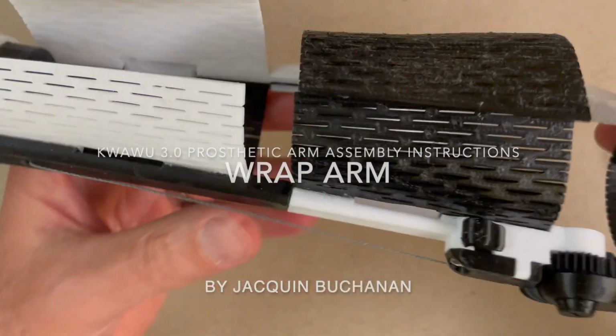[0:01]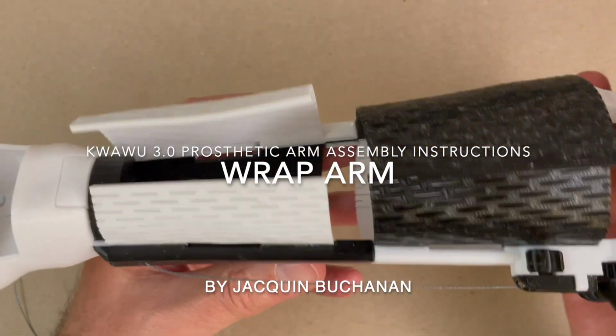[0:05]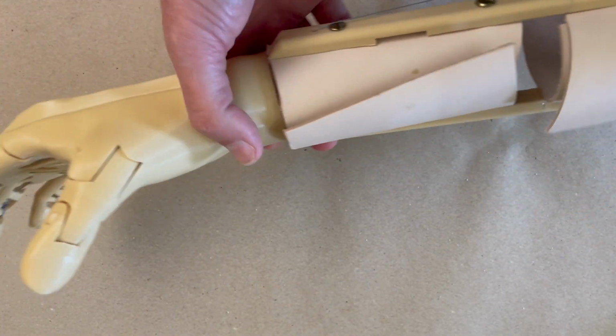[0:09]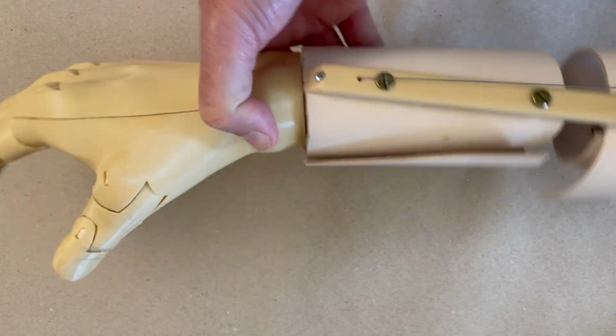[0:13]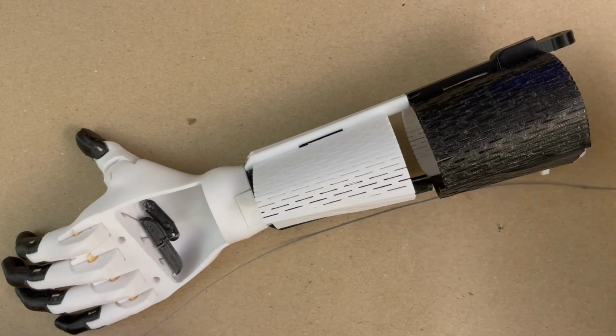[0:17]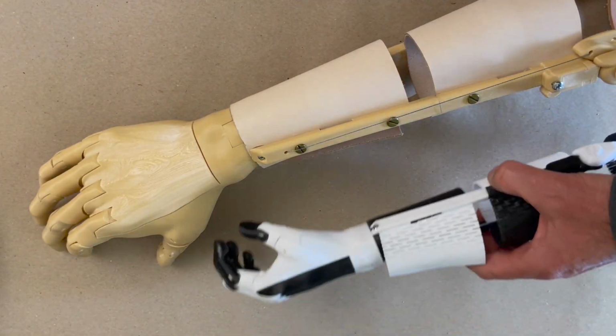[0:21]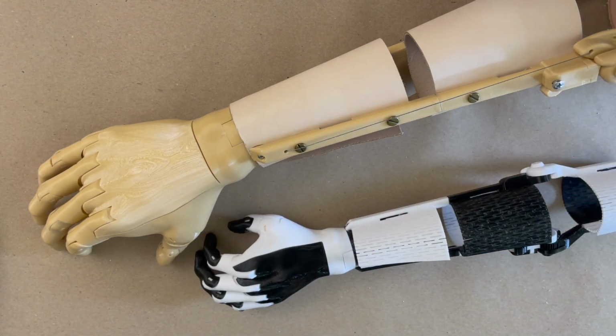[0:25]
Welcome to the Kwawu 3 wrap arm assembly video. We're going to put together the plastic wrap arm and the leather version of the wrap arm together in a single video. There's only a slight variation between the two, so I'm going to combine these two into one video. No matter which one you're building, you'll be able to follow along with both. I'm doing the child size plastic arm and an adult size leather arm just for some variation in the video.
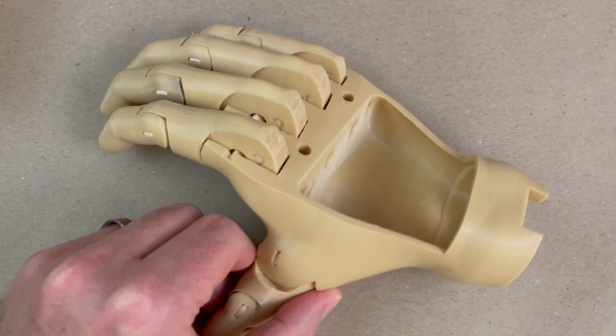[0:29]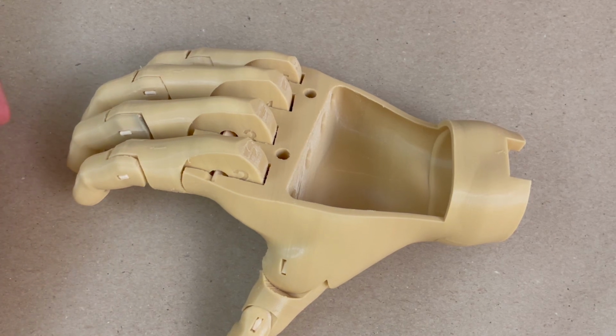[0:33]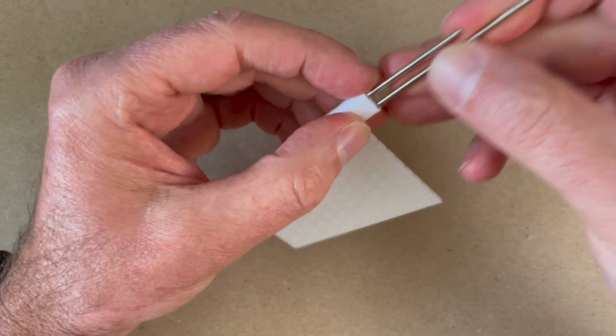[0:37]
So in a previous video, you should have already put and strung the hand together for the arm you're building. In this video, we're going to be attaching the hand to the arm. So let's get started and put together the plastic parts first.
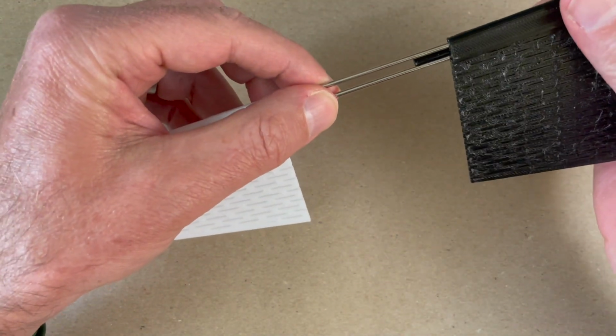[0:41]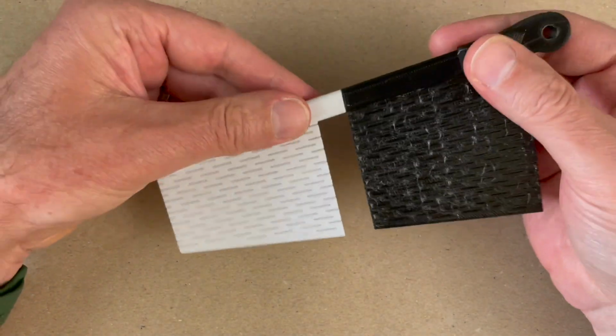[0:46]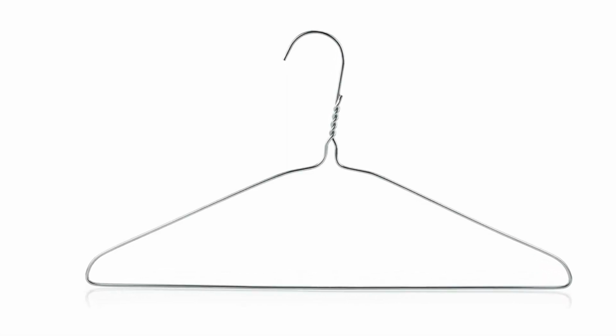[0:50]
I've got these 2mm rods, and you can get these 2mm rods on Amazon. They're called axles or toy axles or something like that. You can also use an average wire coat hanger, which is also a 2mm rod.
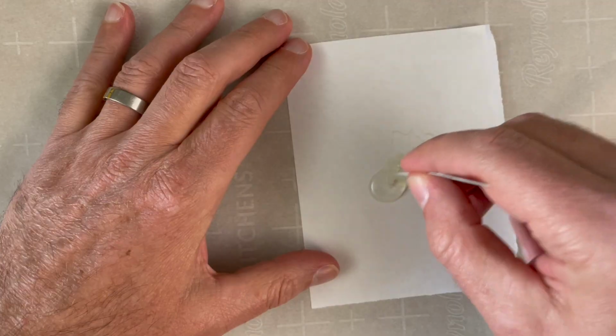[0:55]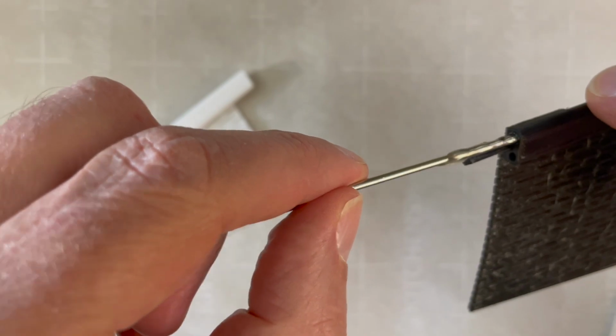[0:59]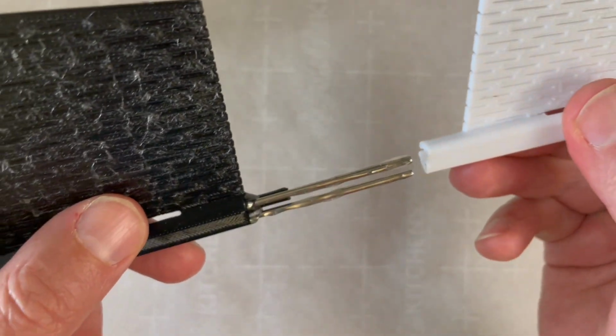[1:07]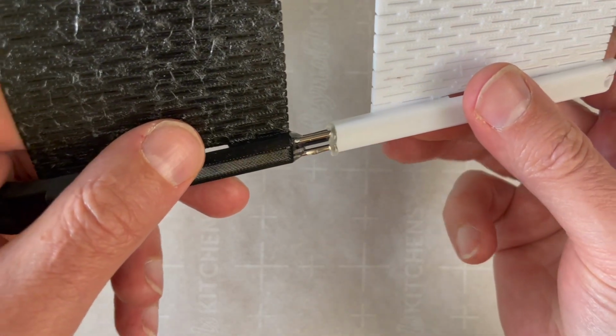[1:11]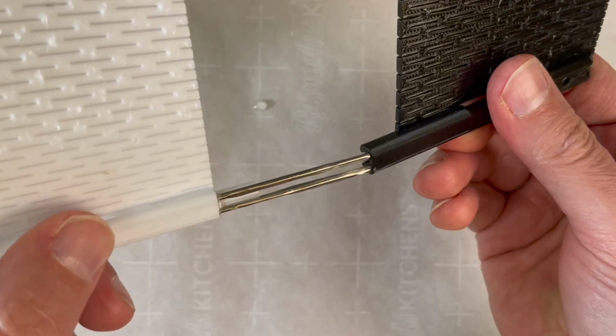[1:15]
We're going to mix up some two-part epoxy. We're using a lot of two-part epoxy in this video. That's how we're putting everything together. It really holds the PETG together well, so it's what I recommend. You can use CA glue, but it just doesn't hold as well as the two-part epoxy. These are sort of big joins, and you really want something that's going to fill the join and hold it. So I'm going to put a lot of epoxy on the rods, and put these two pieces together.
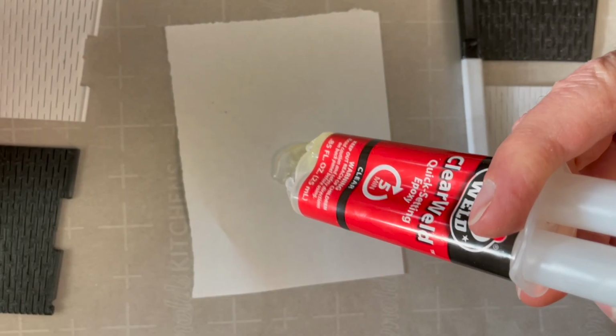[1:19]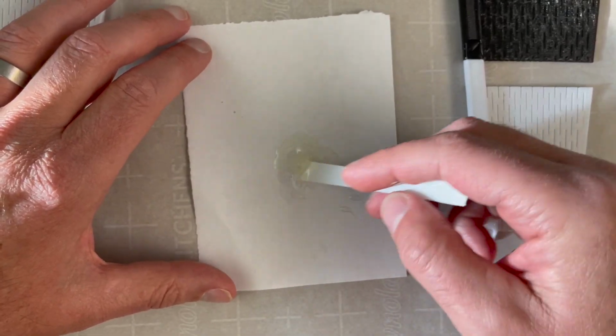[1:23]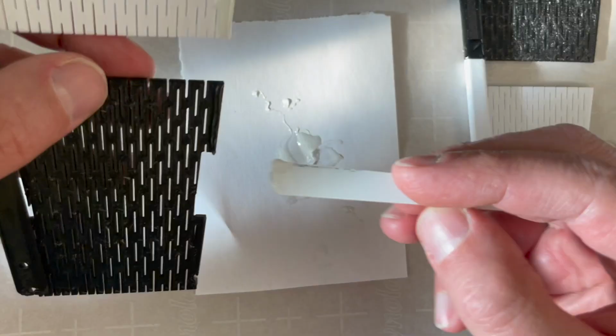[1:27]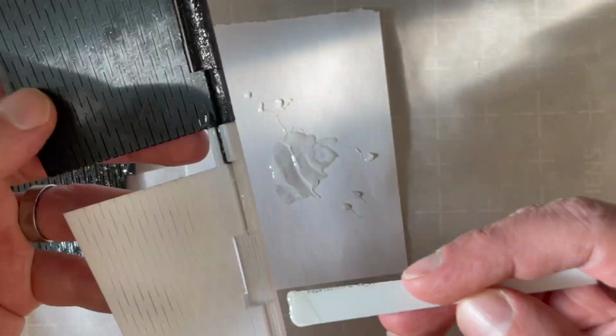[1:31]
I'm going to mix up some more. I really mix up the epoxy as I use it. This stuff sets really fast. If it starts to set, it really won't bond anymore, so you want to mix up only as much as you're going to use on each joint. I'm putting lots of epoxy here.
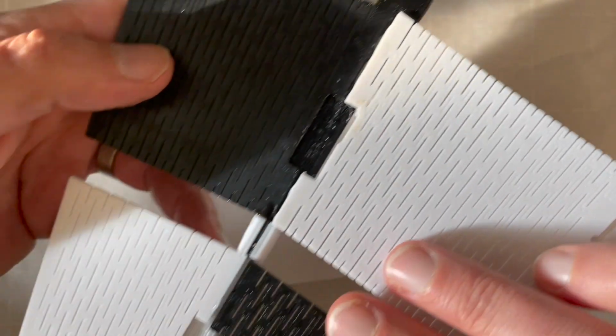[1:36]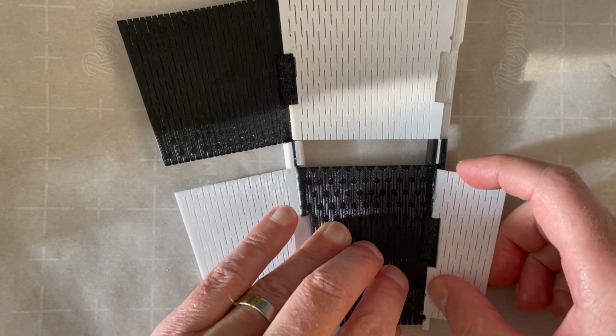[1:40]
Now that I've got all six parts of the base of the arm epoxied together, I'm going to put some paper over this just so I can put some weight on it and let it dry overnight.
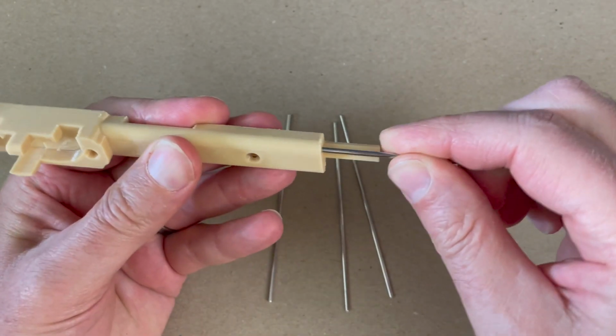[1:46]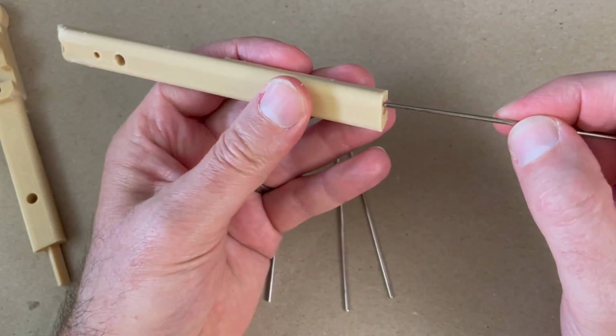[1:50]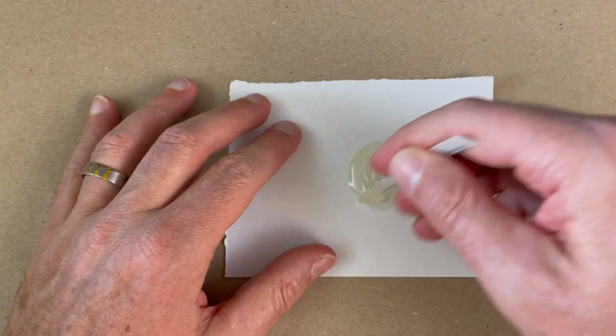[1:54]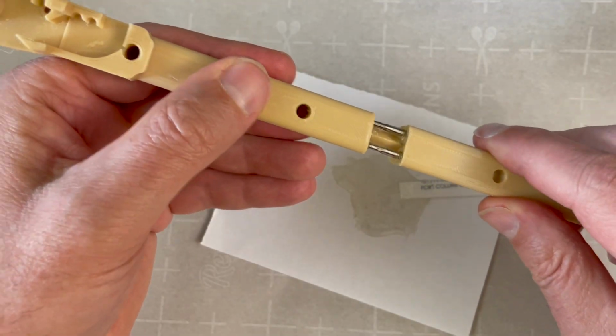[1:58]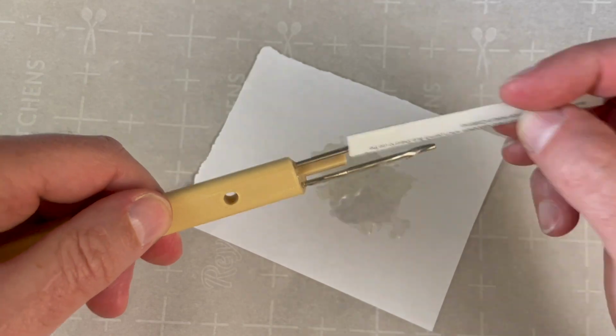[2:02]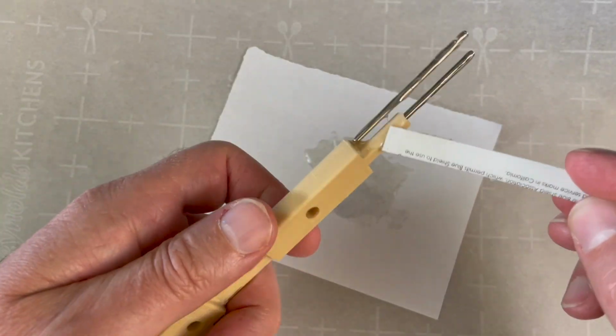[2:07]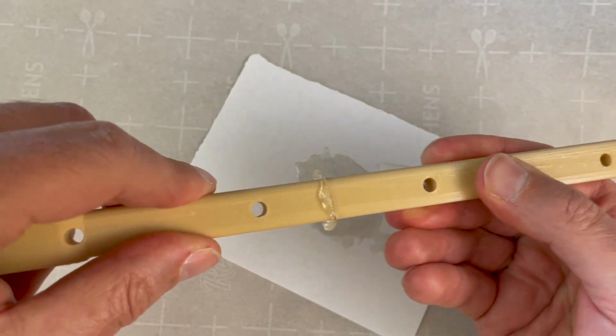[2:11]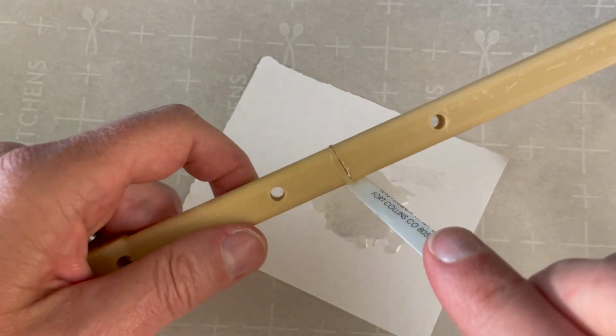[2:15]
All right, let's put the leather arm together. The leather has the same 2mm rods. No matter what size the arm is, they're always 2mm. Again, lots of epoxy. Here we don't have the flat plastic parts because that's going to be leather, and we're just putting together the stiffeners. You should have cleaned all these parts in the previous video, and just make sure they fit together well. They should slide together really clean, and clean off the excess glue.
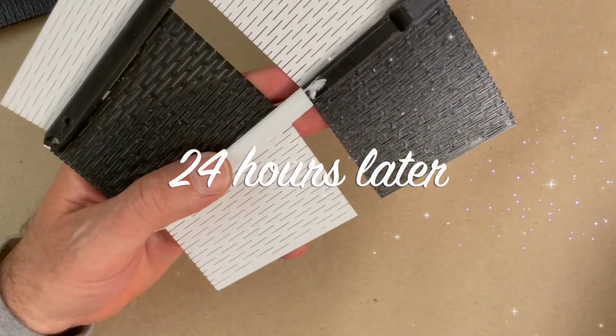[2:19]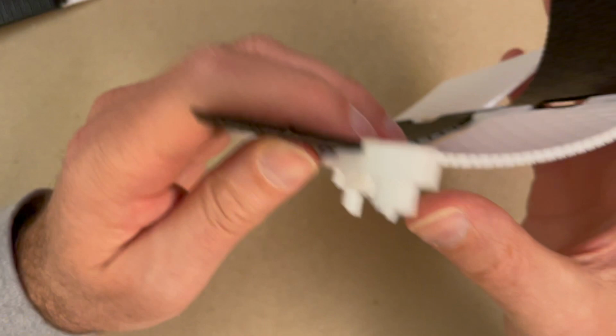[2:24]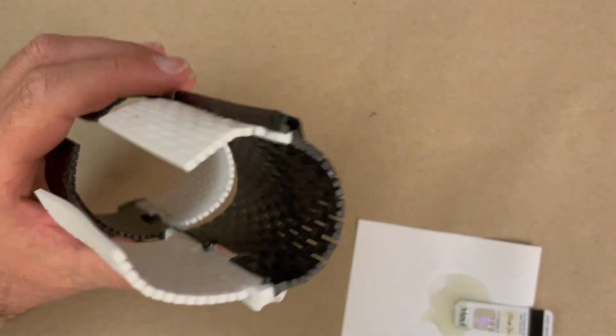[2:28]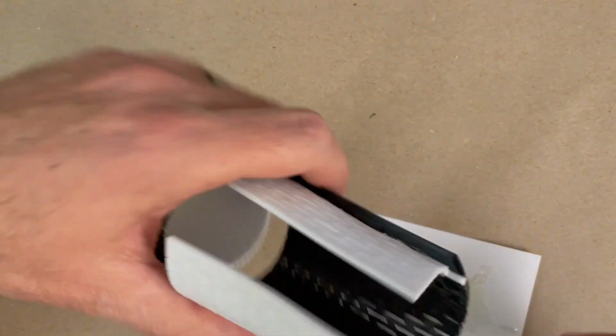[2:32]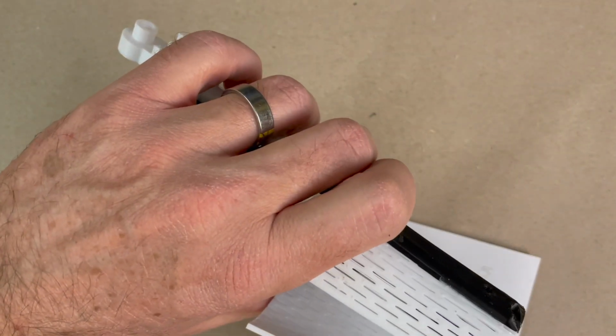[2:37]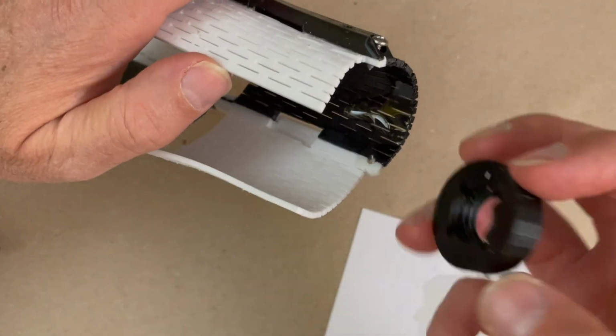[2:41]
Let these parts sit aside to dry overnight. Okay, now that these plastic parts have dried overnight, I'm just going to clean off a little bit and make sure that everything holds together well. It should flex really well and feel nicely bonded. For this small child size arm, I did heat it up off camera with a hot air gun. You shouldn't have to with a larger size. I did find with a child size, it's just a little easier to heat it up and make it a little more rounded. All right, we're going to put the wrist attachment in here.
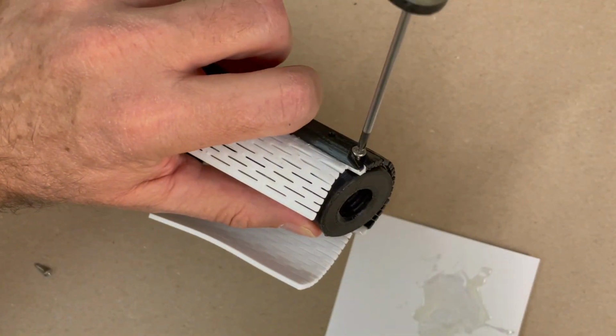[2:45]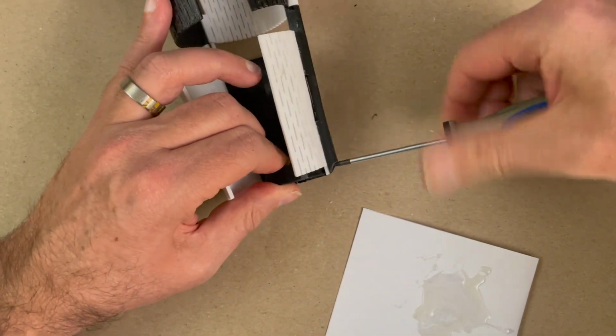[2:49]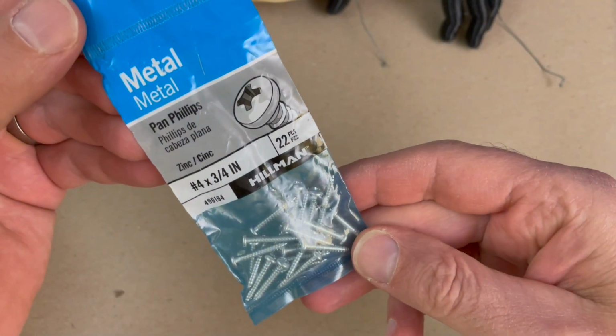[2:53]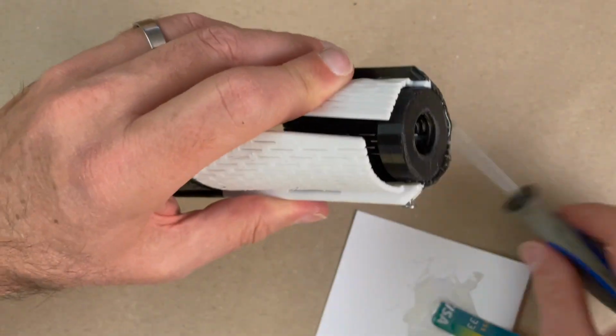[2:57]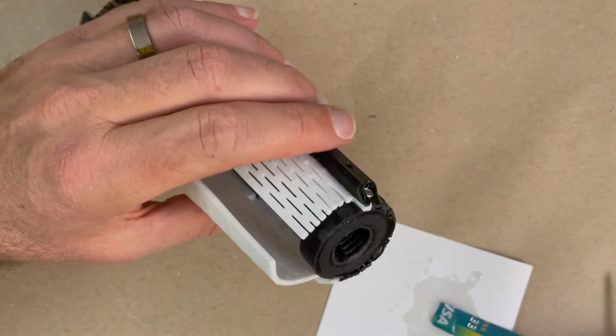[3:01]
Again, a lot of glue on this edge. I really want this to bond well. It's going to take a lot of force when the hand tries to flex against this arm. There are number 4 panhead sheet metal screws holding this in. You'll need various lengths, but they're all the same type of screw. If you're outside of the US, that's a 3mm panhead sheet metal screw.
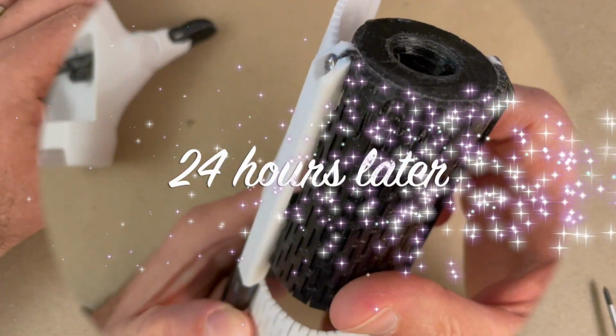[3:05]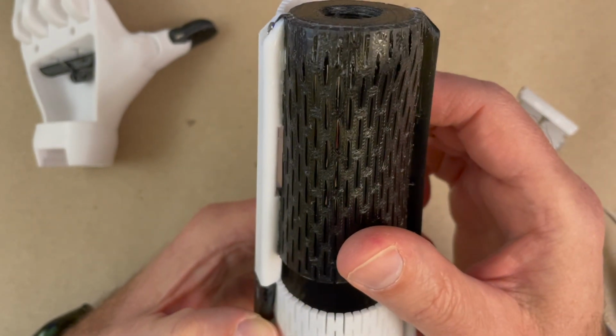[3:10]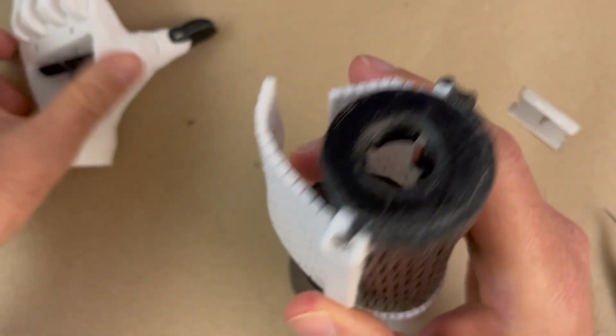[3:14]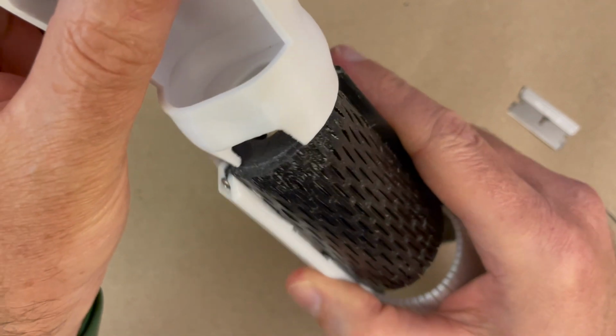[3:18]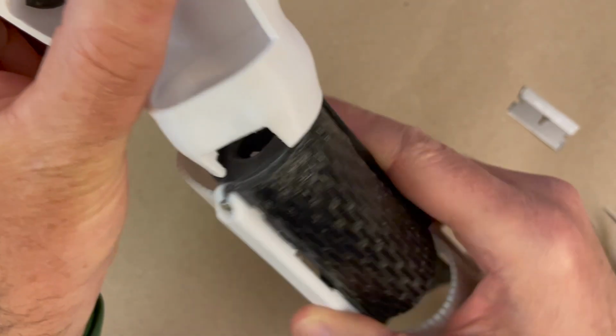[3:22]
And once this is dry, I'm going to make sure this end is flat. I've actually filed this end a little bit to make sure that it's nice and flat so that the wrist can twist against it well. It tends to stick up a little bit or isn't exactly flat against the wrist piece, so I'm going to file that nice and clean.
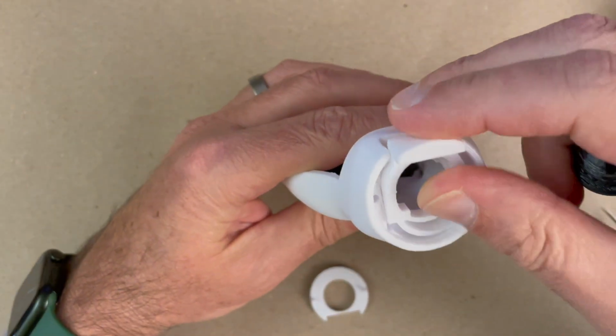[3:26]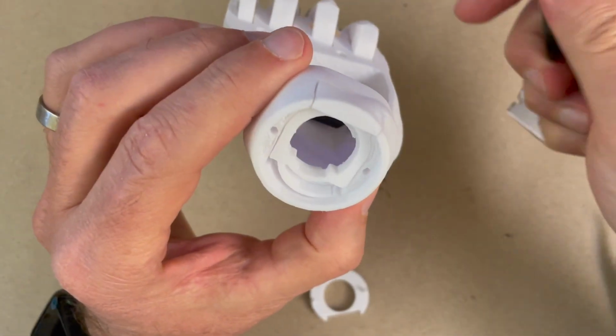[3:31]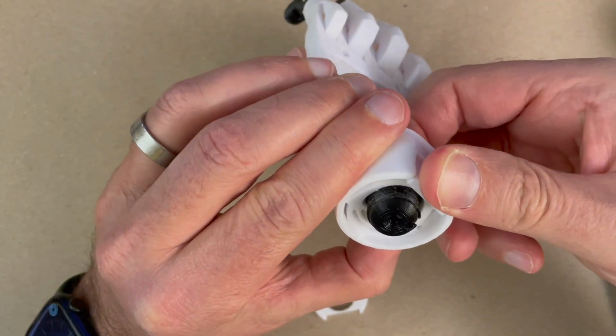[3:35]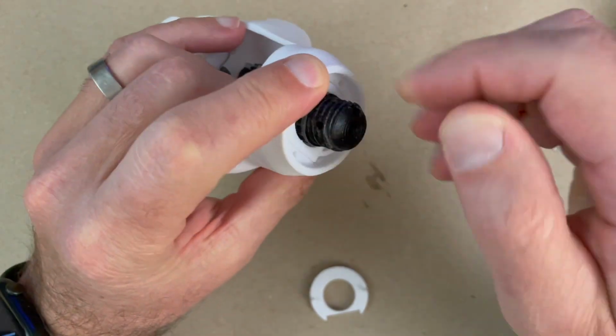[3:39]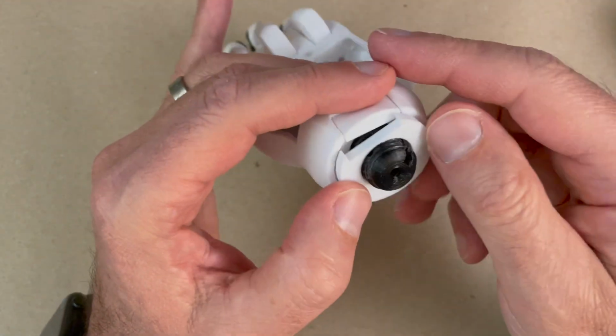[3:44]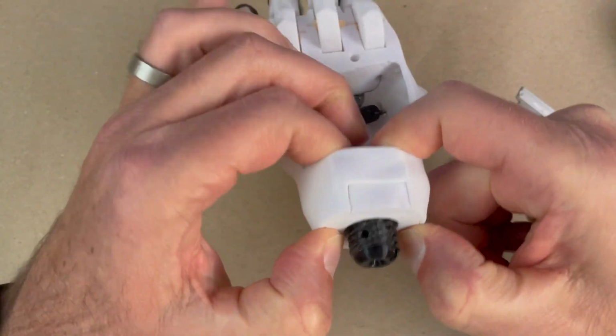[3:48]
Here's the hand that I put together in the previous video, and we're going to go ahead and attach that to the arm. First thing I'm going to do is put the wrist bolt in here. Again, I should have tried that and made sure that it fits nicely. It should spin, and shouldn't be any wobble. It should be a really snug fit and spin freely, but also not wobble. I'm going to go ahead and put the cover on here. This is the last time I'm assembling the wrist bolt together, so just make sure it fits nice and smooth.
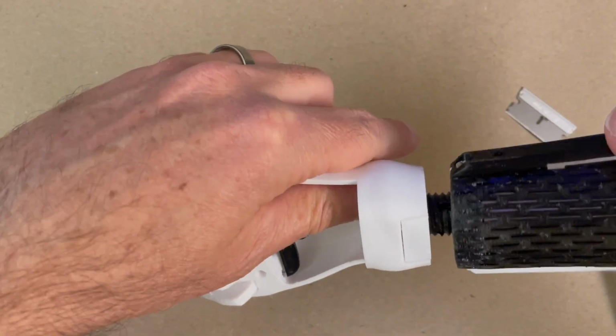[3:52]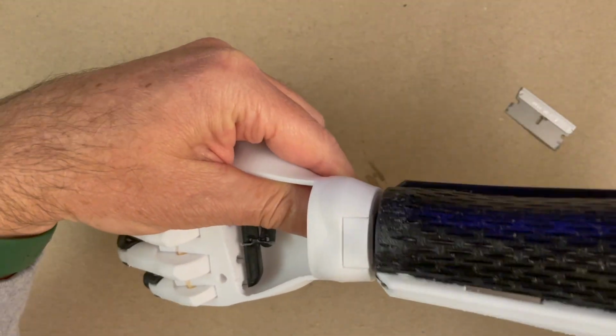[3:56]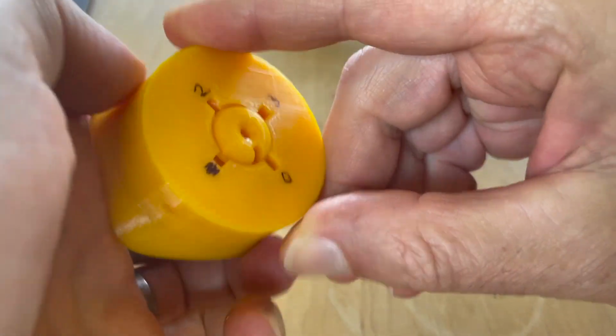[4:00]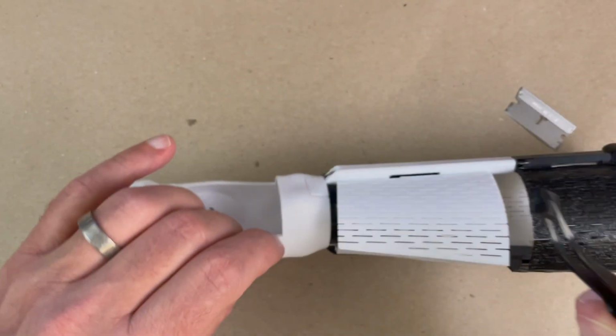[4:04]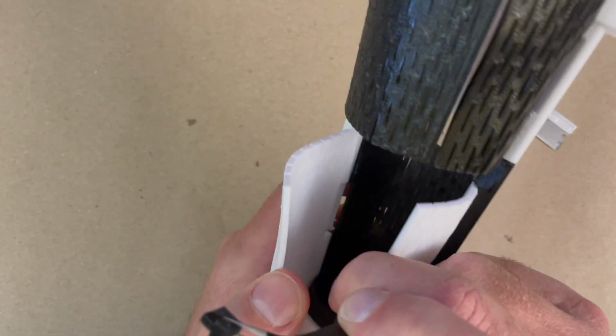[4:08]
So we can now screw these two parts together, the wrist and the arm. And again, we've cleaned all these parts before, so I know they're going to go together well. You'll notice that there are 4 slots all the way around the wrist bolt, and this cotter pin could fit in any one of the 4 slots. Just tighten the arm and wrist down as tight as you can get it, and then back it off to the last quarter slot.
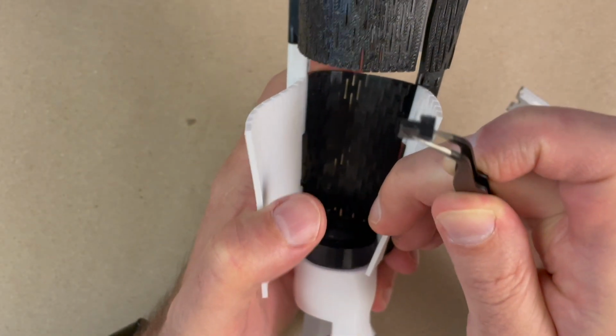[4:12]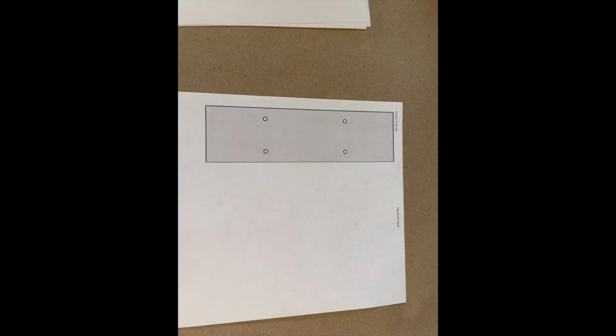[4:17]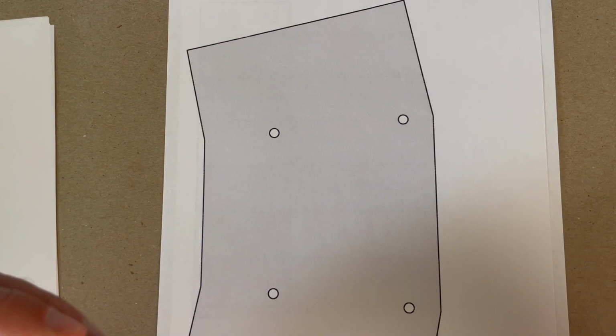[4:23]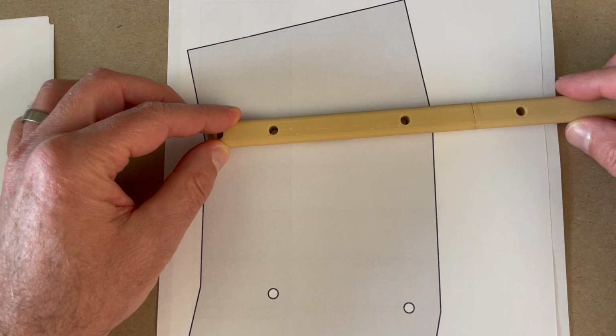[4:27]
So you're roughly a quarter turn off, so everything still spins nice and freely. Now that we've got the plastic arm together, let's go back to the leather version. In the leather version, you should have printed out your leather templates. They're SVG files. I found that Google Chrome prints at the right scale directly.
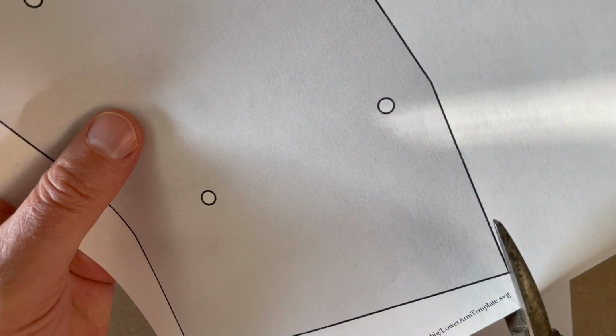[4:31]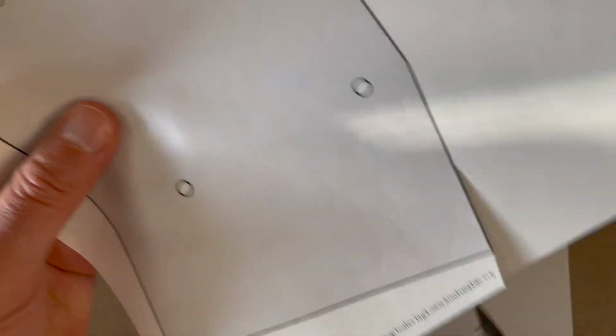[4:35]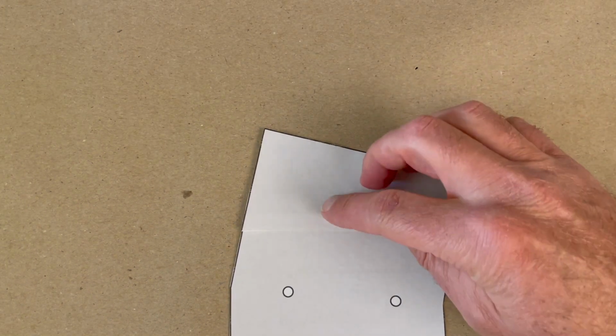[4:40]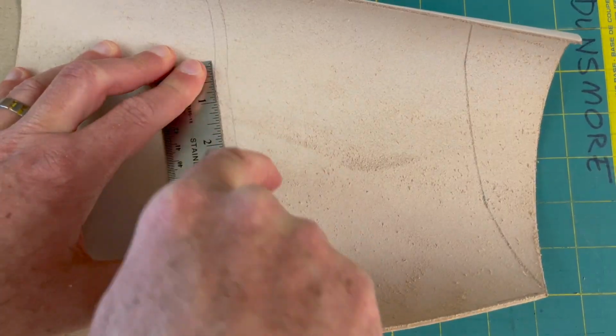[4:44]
Take your 3D printed parts, hold it up, make sure that the holes line up. Then you can cut out your design and transfer it to the leather. If you printed more than one piece of paper, just tape them together. Leather cuts pretty easy with a utility knife. I'm no leather expert, but this seemed to work pretty well.
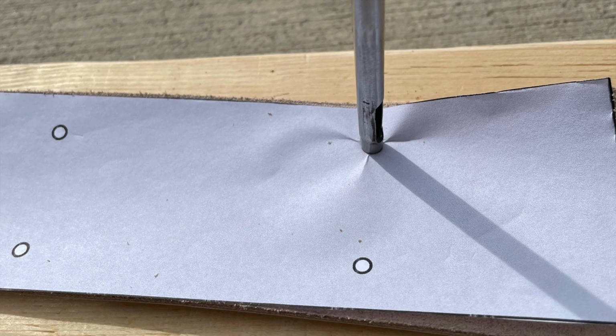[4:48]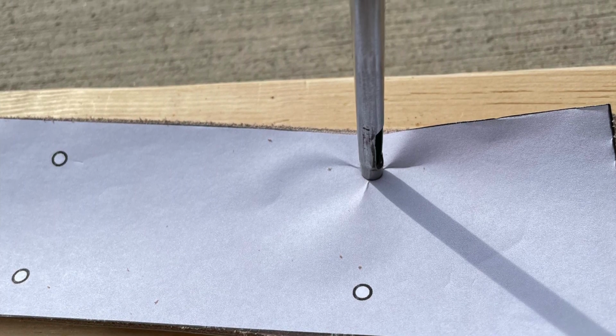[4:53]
I have found it's worth it just to go ahead and get a leather punch. Order one of these online. They're made to do this. They work beautifully. Anything else, and the hole is just a little rough. It doesn't quite fit right.
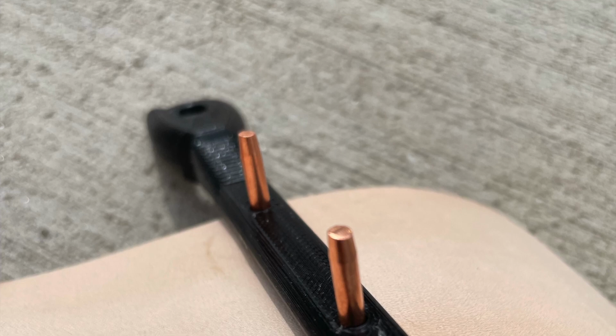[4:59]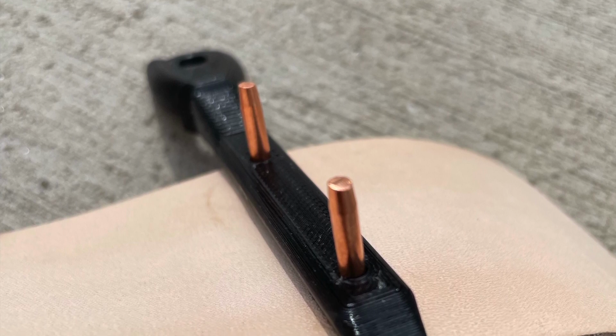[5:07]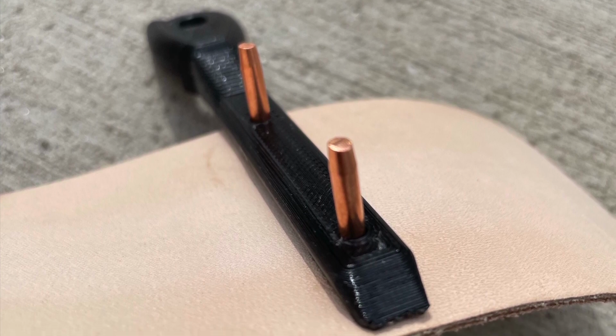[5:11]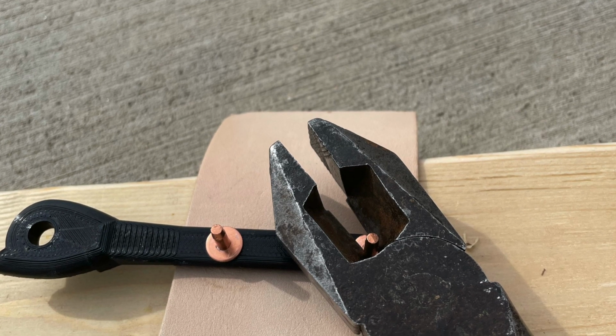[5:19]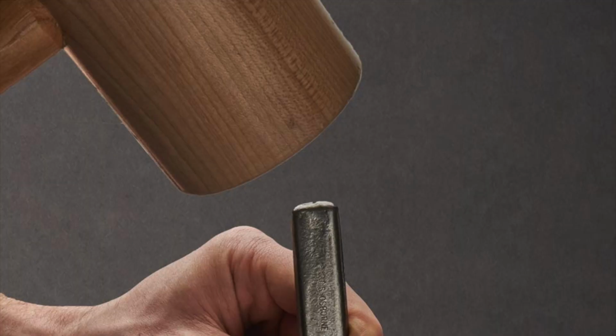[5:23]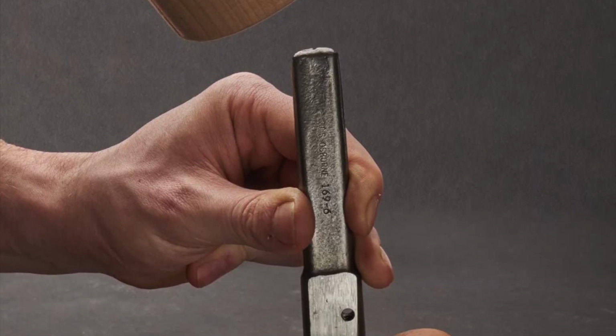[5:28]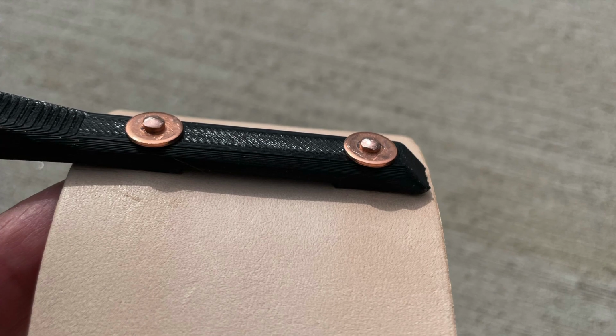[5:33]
I'm using these copper rivets. Sorry, I just took a photo. I didn't get this on film because I was outside so I could pound it on a piece of metal. These copper rivets are pretty easy to use. I like them because the shaft is thin, 3 millimeters, and you can cut it off at any length. So you just put the copper rivets through, cut them off with a big pair of pliers, like lineman pliers, and then use this special tool that you order as well, just to hit the end to round it off nice and smooth. Now you can hit it too hard and break the plastic.
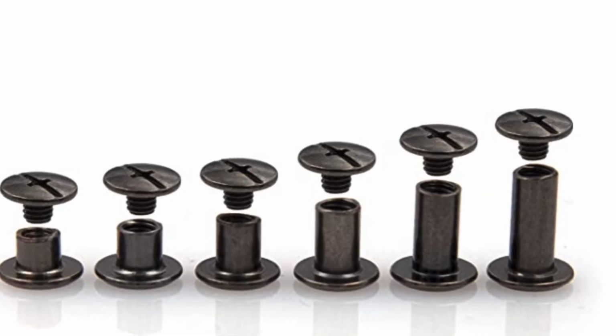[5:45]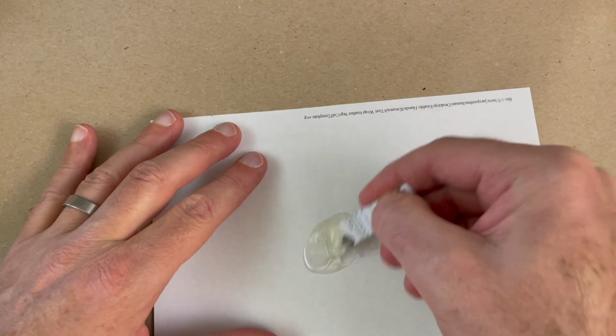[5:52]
I've now put together a whole bunch of these and not had any trouble. I only broke one or two. And from then on out, I realized just how hard you have to hit to not break the plastic. Now, if you've got a bigger arm, then you can go ahead and use these Chicago screws. You can order these. All right, we're gonna mix up some more epoxy for the leather side.
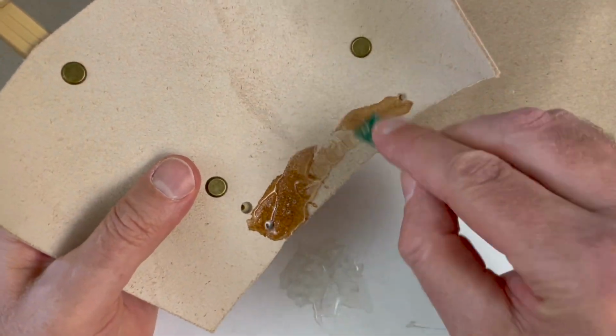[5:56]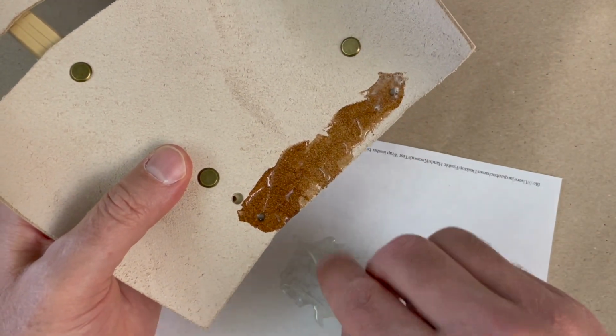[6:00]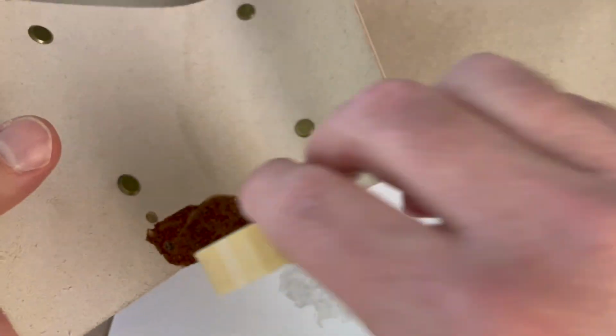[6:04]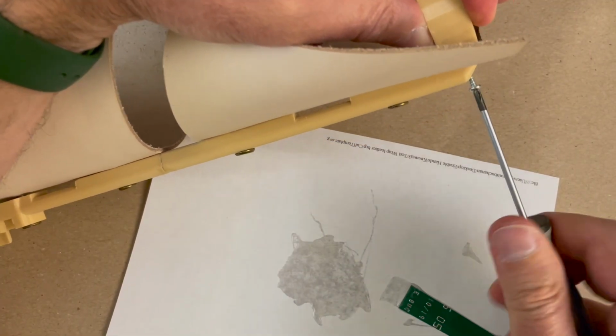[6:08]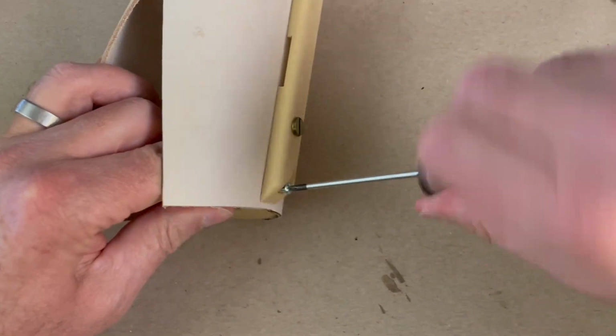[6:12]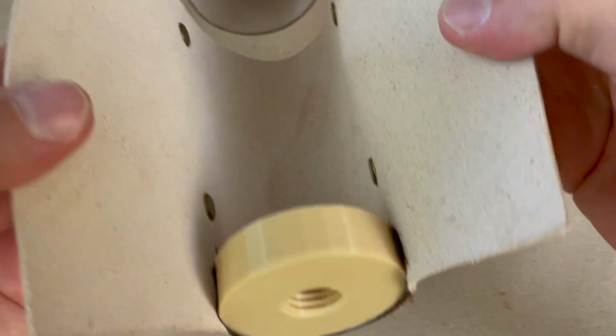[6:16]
Here I am, I'm gonna use 2-part epoxy to bond the wrist bolt attachment to the leather itself. I've just found the 2-part epoxy is the best thing to bond leather to plastic. Again, I'm using these number 4 pan head sheet metal screws on both sides, just like the plastic version, to give it that extra strength. But you still really want plenty of epoxy in there to make sure that bond is really good.
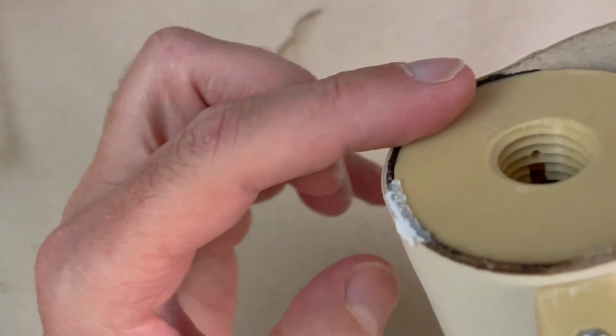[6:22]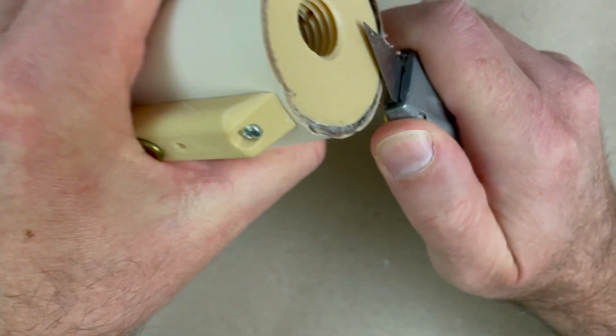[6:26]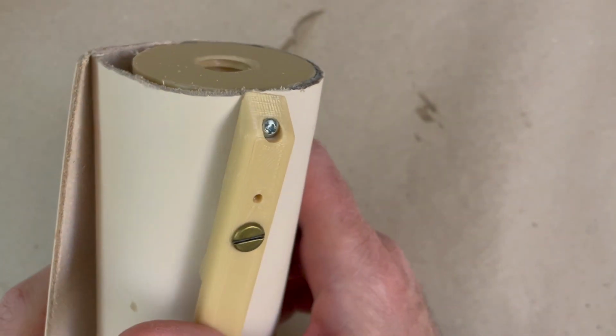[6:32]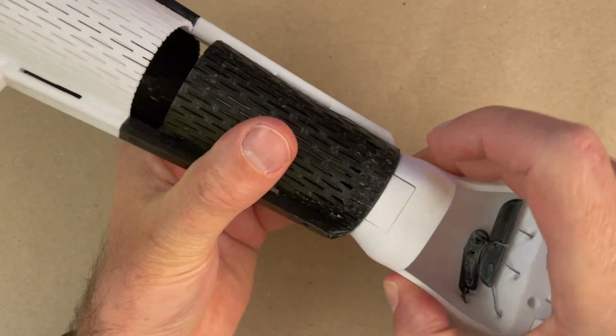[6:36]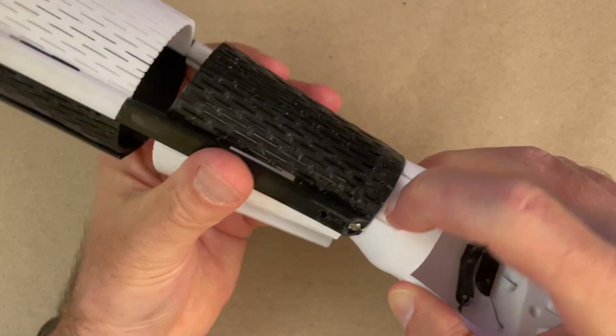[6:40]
All right, I've let this dry for 24 hours. And now again, just like the plastic version, I'm gonna clean this wrist attachment nice and flat. You can see it just picks up a little bit, and I want it nice and flat so the hand can rotate against this without any catches at all. And whether it's plastic or leather, I want this button to be able to press down, pop up easily, and not get caught on that arm.
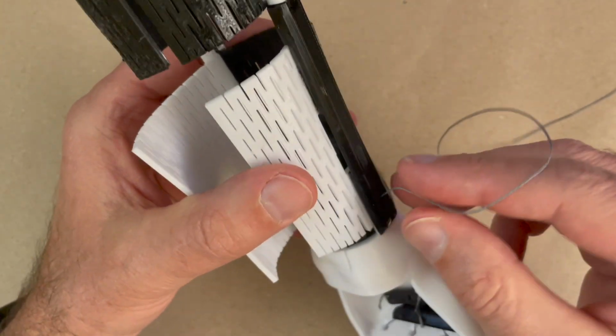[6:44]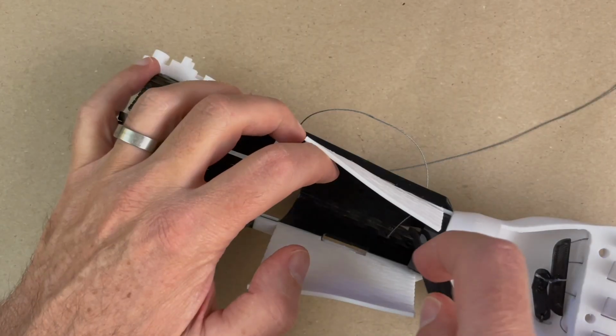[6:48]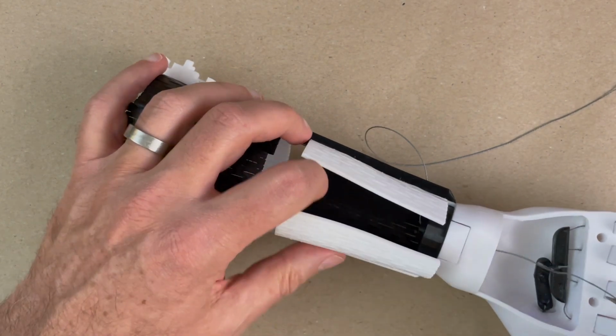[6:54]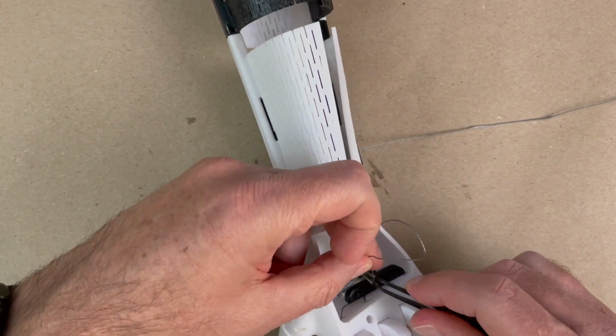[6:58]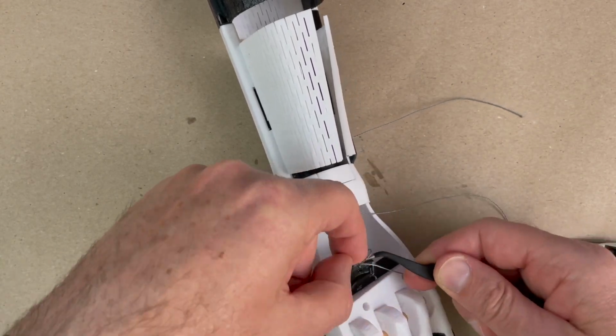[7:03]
All right, let's run the thread in the plastic version. So I found it easier to run the thread from the top down through the center of the hole in the bolt, and then just tie a knot in the top of the whippletree. Put some CA glue on this knot, like I always do, let that set, and then we're gonna go ahead and do the ratchet.
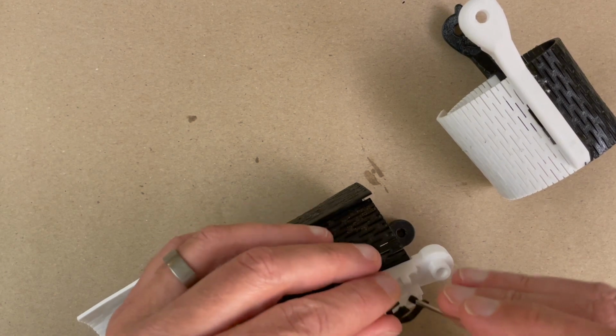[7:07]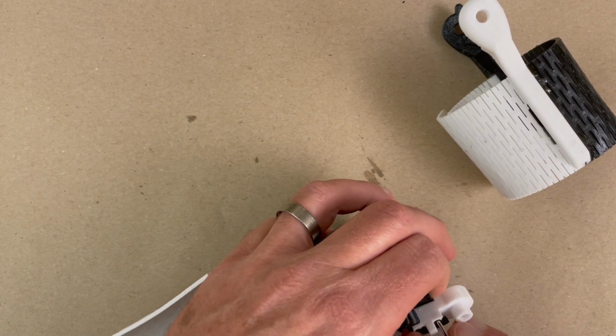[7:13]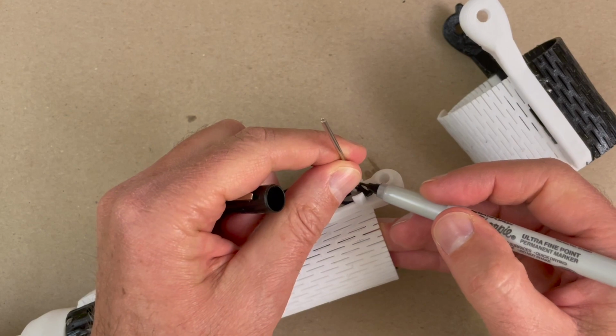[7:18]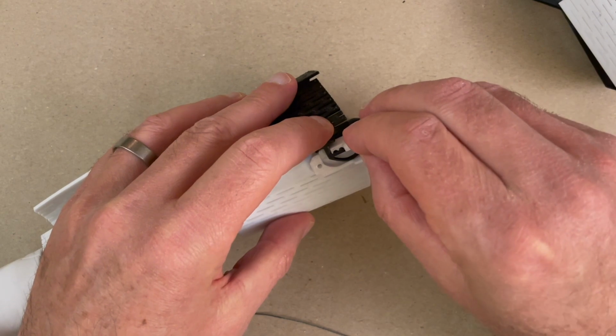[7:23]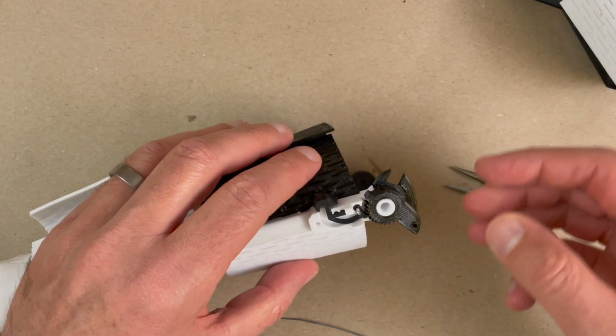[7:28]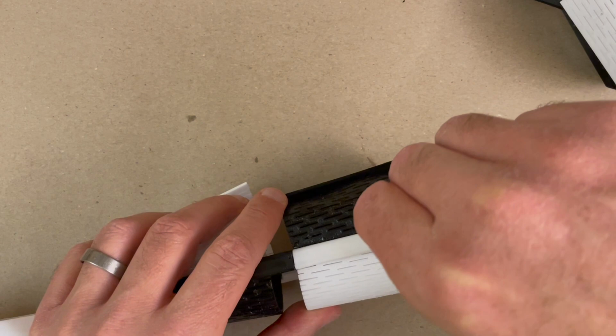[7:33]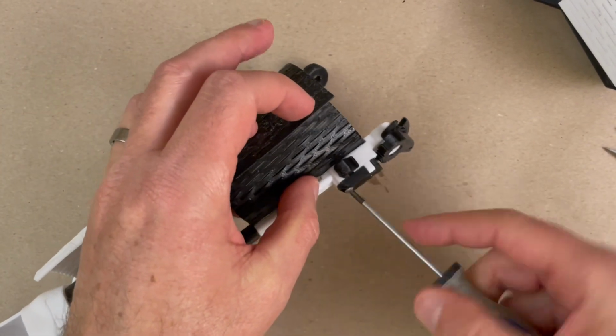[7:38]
The ratchet, just like assembling the arm, I've used this 2-millimeter rod. Again, no matter what size your arm is, it's always a 2-millimeter rod at the center of this ratchet latch. I'm gonna mark it where I wanna cut it, and then again, use maybe some lineman pliers to cut the rod, and then insert it back in here. Now I'm gonna test with the ratchet itself and just make sure everything fits okay. Again, another number 4 pan head sheet metal screw to hold the cover of this on. Here you wanna make sure the length is short enough that it doesn't go into the arm, but otherwise it's the same type of screw.
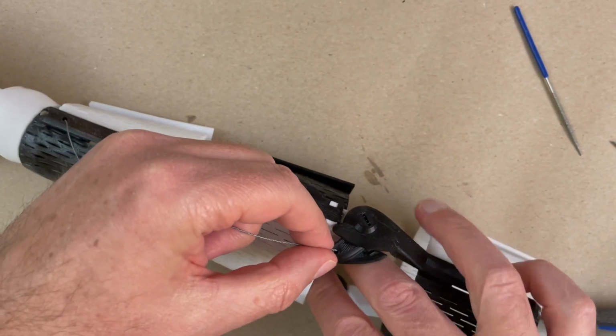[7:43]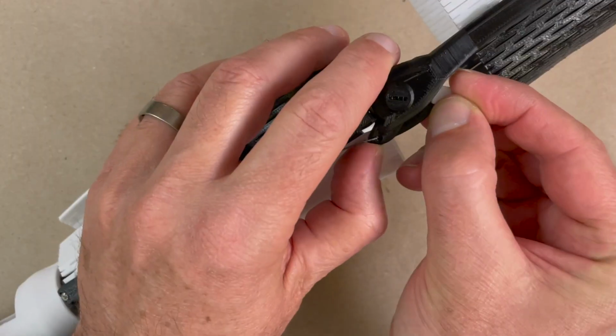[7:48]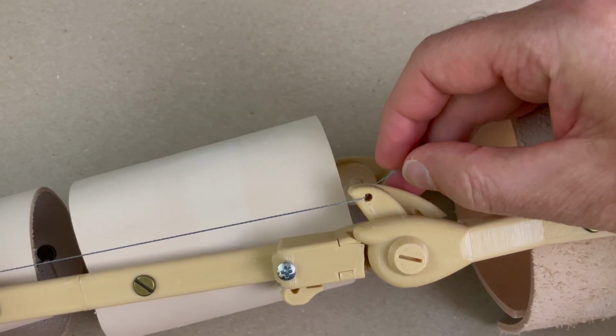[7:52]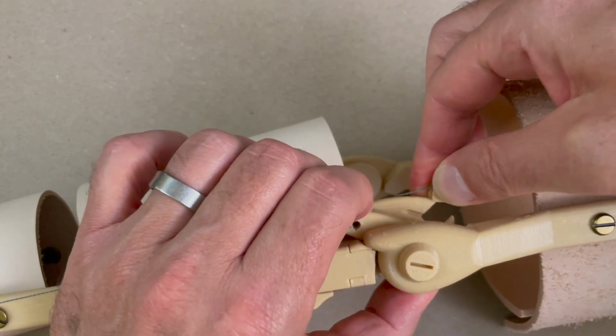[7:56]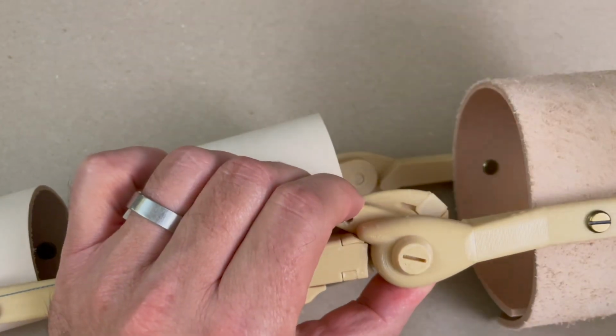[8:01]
I really like this tensioner because I just run the thread through the center of the tensioner, and then I can spin the tensioner around as many times as I want to adjust the tension. So even after this arm is assembled, I can adjust the tension by just popping this square out, rotating it a few times, and sticking it back in.
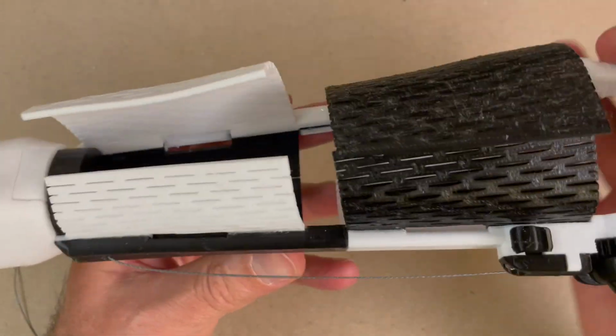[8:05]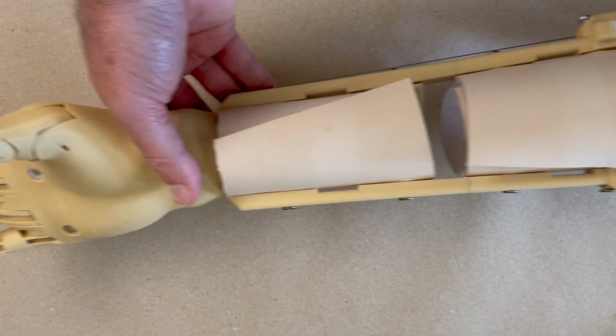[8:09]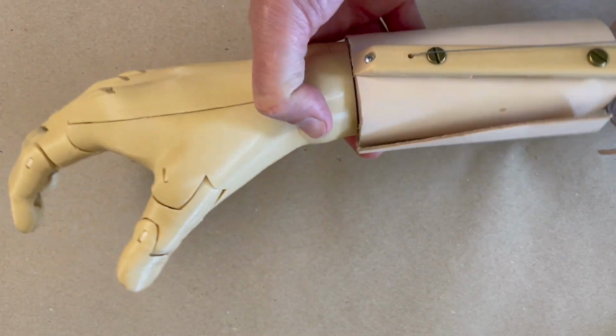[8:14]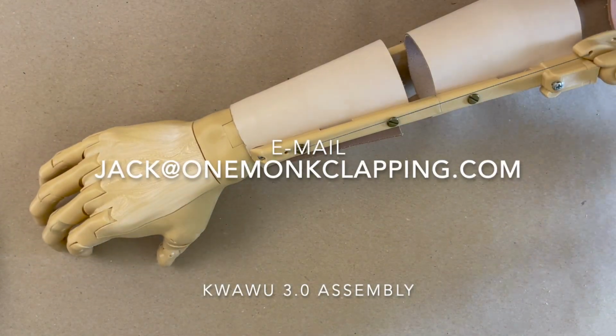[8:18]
Now I realize I assembled this cuff in this video. I'm actually going to assemble the cuff in the next video because the cuff is the same whether you're doing the socket or the wrap or whatever design. So you'll see how to assemble the cuff in the next video. But I didn't film it in that order, so sorry for showing that in this video.